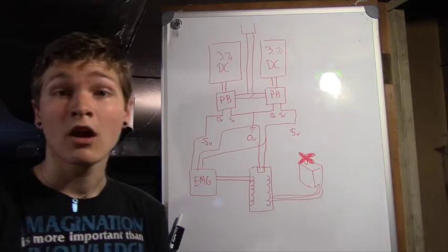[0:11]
So in this episode, we're going to be working on the electronics, so all the wiring, some of the code, and trying to get the electronics of the whole hand to work. All right, so this is essentially how the whole prosthetic is going to be wired up.
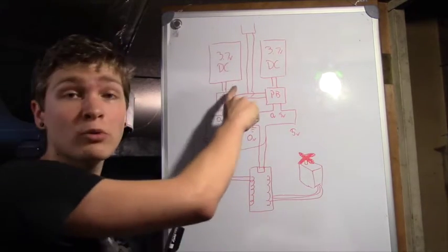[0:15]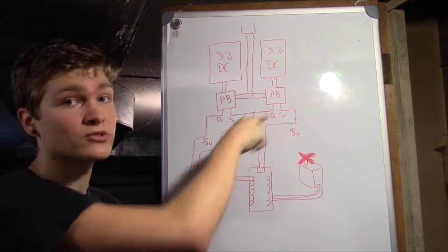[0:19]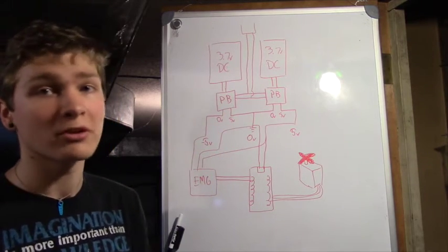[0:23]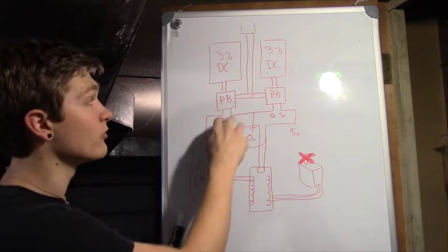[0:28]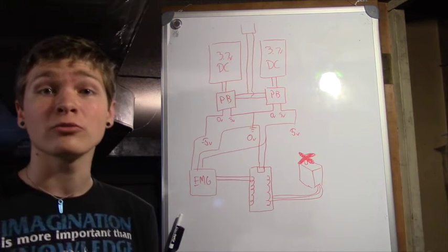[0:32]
I've got my two 3.7-volt lithium-ion batteries on the top, and those are both going into my Adafruit power boosts. And those are going to take the 3.7 volts and boost them up to 5 volts, 5.2 volts, but around there. And then what I'm going to do is take those two 5-volt and 0-volt outputs from the two power boosts, and I'm going to wire them in series. And what that would normally do for me is give me a 0 volts and a 10 volts, but I don't need 10 volts.
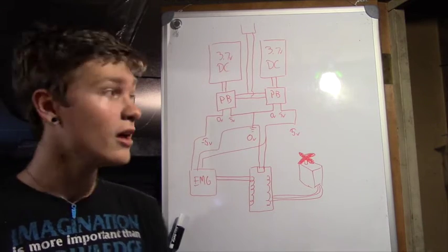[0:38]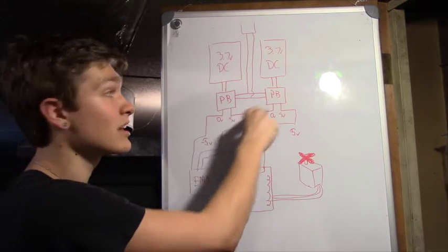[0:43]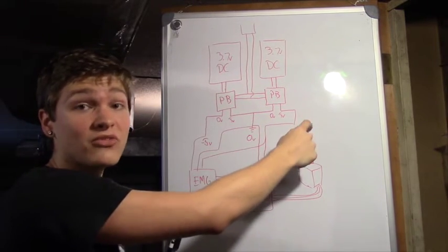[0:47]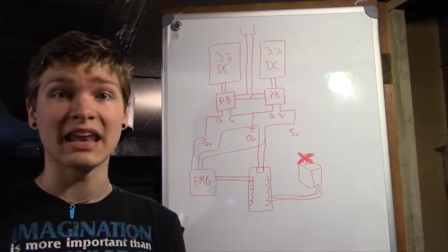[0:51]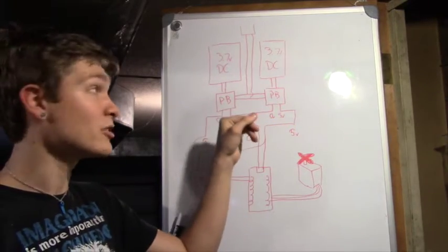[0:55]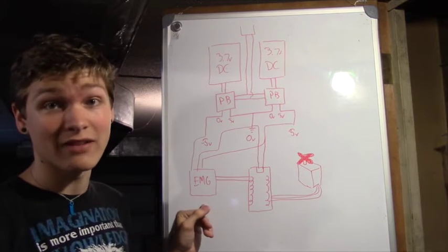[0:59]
I could power the Arduino, the servo, most everything off of 5. What I do need, though, is a negative 5 volts. So what I'm going to do instead is make the center connecting wire between the two power boosts my ground, and I'm going to make one side of the power boost 5 volts, and the other side negative 5 volts. My EMG board actually needs a negative voltage to work properly. So by splitting it up this way and making my center point here ground, I'm giving my EMG board the negative 5 and the 5 volts that it needs.
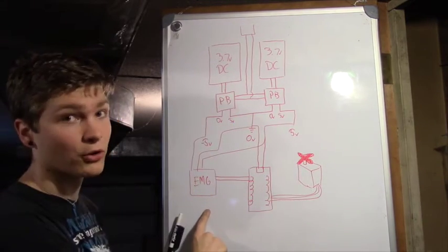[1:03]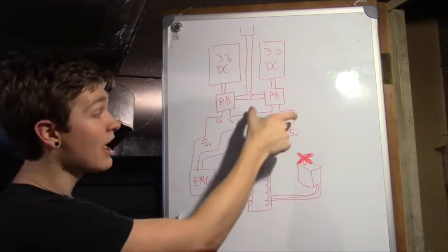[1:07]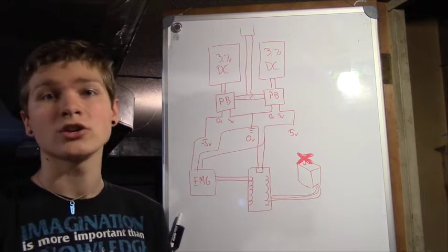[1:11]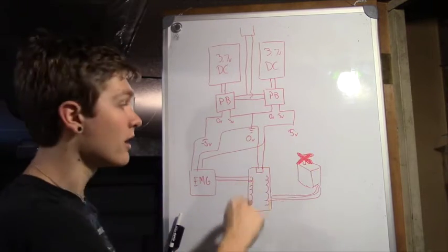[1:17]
So then I'm going to take those three outputs, and those are all going to go to the EMG board over here. Then I'm going to take my ground and my 5 volts and put those into the Arduino, and that's going to power the Arduino, the logic, all the buttons, all the switches, sensors, all that kind of stuff is going to be powered by that 0 and 5 volts there. That also means the servo, which is going to be connected to the Arduino.
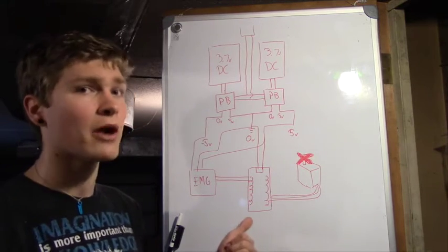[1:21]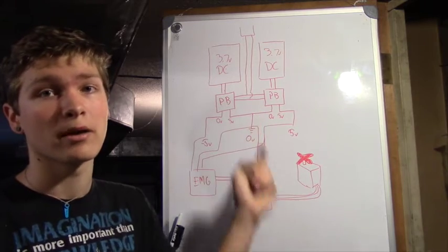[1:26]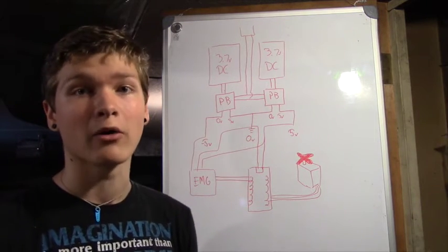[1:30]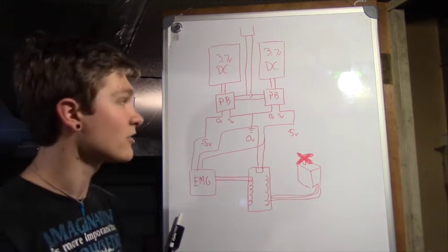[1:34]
It may actually be powered through the Arduino's voltage regulator, but I might just power it directly from the power boost because it probably has higher amp clearance. It can put out more power than the Arduino can, so I may just wire that directly into the power boost. But that doesn't really matter so much. So that's essentially how everything's going to get powered.
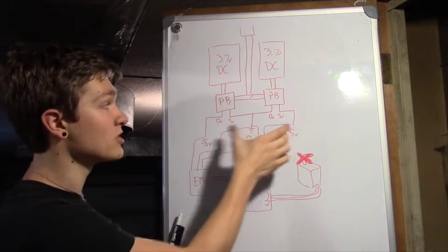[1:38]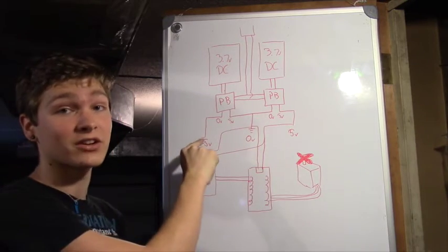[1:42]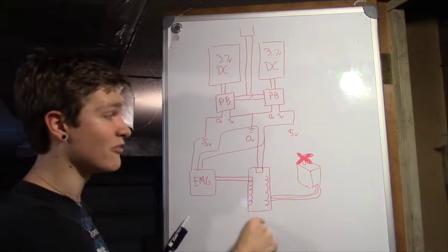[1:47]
I'm going to split my voltage up. It would normally be 10 after wiring in series, but I'm going to make the center ground instead of one side of it ground. And then I'll be able to get my negative 5, my positive 5 for the EMG, and then 5 and 0 for everything else that I need to power.
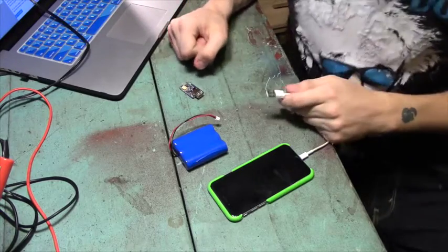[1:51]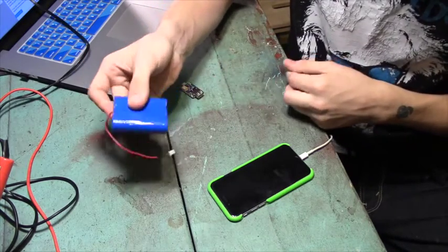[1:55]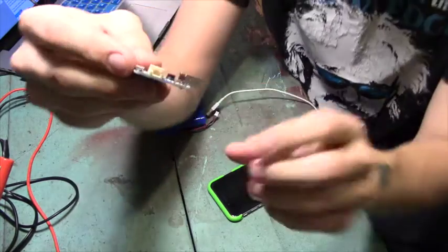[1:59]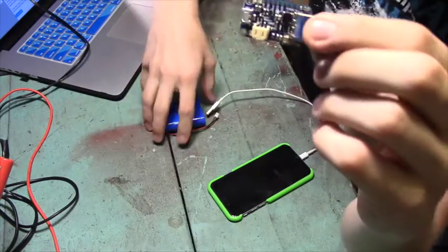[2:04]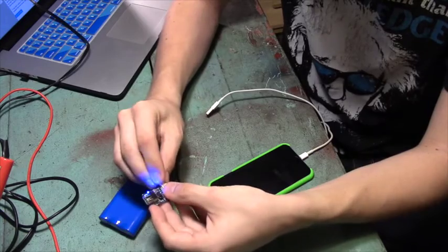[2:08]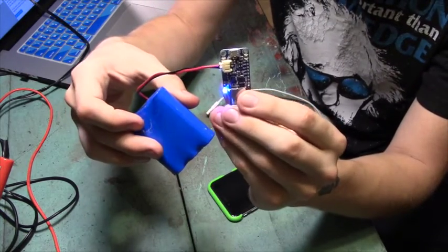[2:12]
All right, so here I've got a kind of a cool demo of how the 3.7-volt lithium-ion battery and the power boost from Adafruit are going to work together. So on the power boost, there is a JST connector right here on the bottom. And that fits perfectly with the battery that Adafruit also sells. So if I plug this in here, I'm going to get a blue power light, which tells me that I have 5 volts coming out that got boosted up.
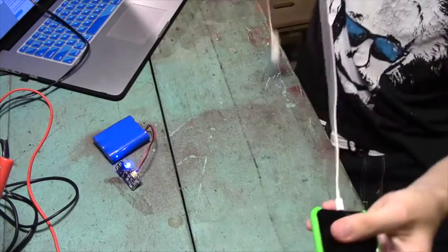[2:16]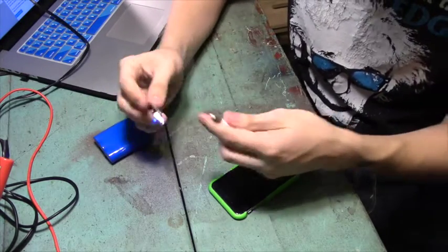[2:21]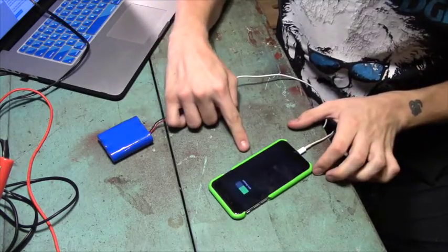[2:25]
And here I've got my iPhone 6 and a power cable with USB on the end, and I just soldered this USB connector to the power boost. And if I plug this in, you'll see my iPhone light up because it's charging.
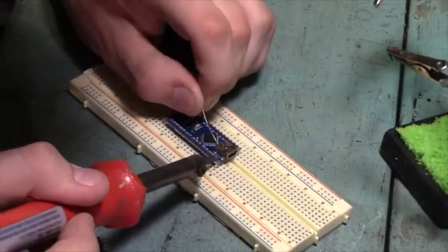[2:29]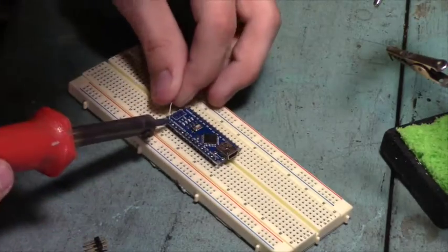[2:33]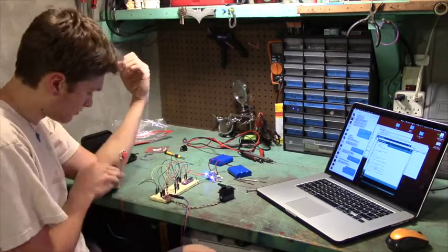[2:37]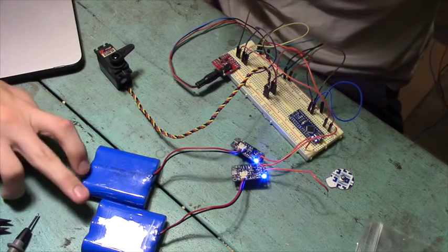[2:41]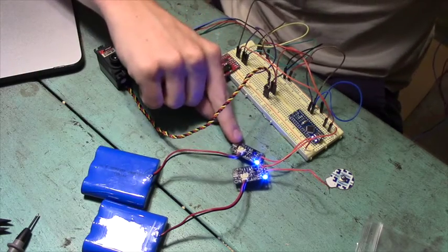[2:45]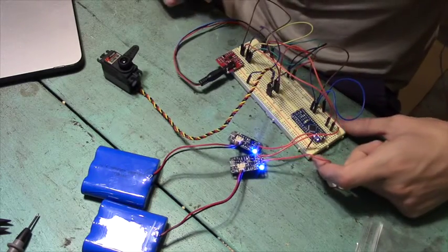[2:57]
So this is the bare bones circuit for the prosthetic. So here we have our two lithium ion 3.7 volt batteries, and both of these are going to our power boost, which are stepping them both up to 5 volts. Just like I explained earlier, they're wired together so that this wire right here is ground, this wire is negative 5 volts, and then this one is 5 volts. I have it disconnected right now just so I'm not chewing through power.
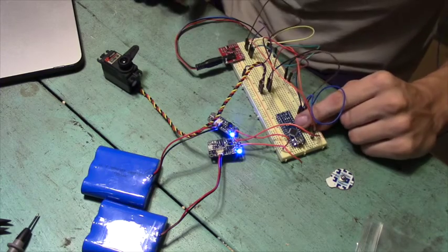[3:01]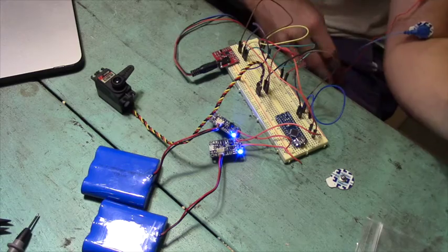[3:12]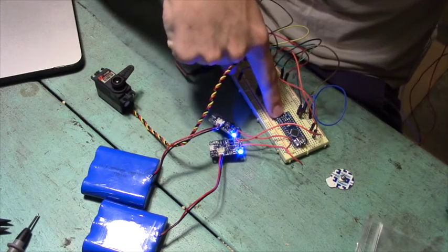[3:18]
Those go into our Arduino Nano, which controls the servo's movement based on the EMG sensor, which is this board here, and you can see this cable runs out, and then this ultimately goes over to my arm. So when I squeeze my muscle, this board takes a signal and sends it over to the Arduino through one of the analog pins, and then my code, which I'll show you in a sec, takes that signal and interprets it to figure out how to move the servo.
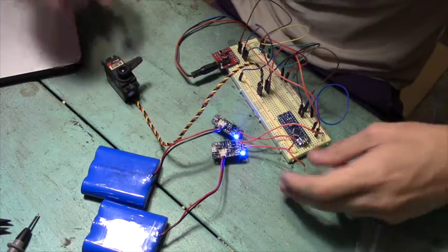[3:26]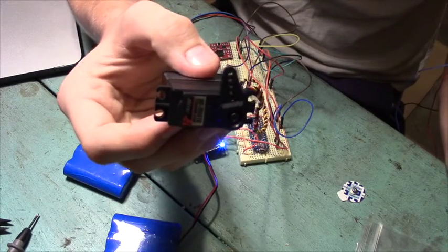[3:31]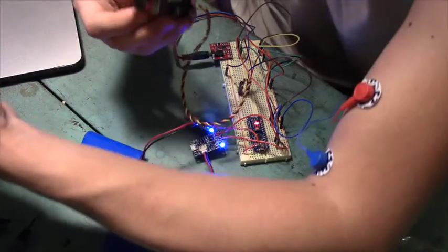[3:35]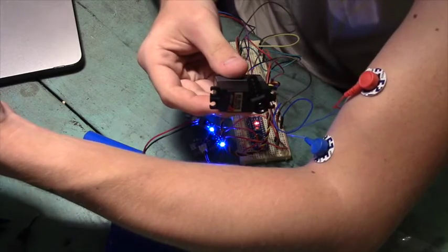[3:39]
So here we're going to turn it on. So Arduino's booting up. So here's our servo. I'm going to squeeze, let go, squeeze, let go, and all I'm doing is just tensing my bicep. Squeeze, let go. Squeeze, let go. Wow, that's actually super cool. Squeeze. And that's really jittery.
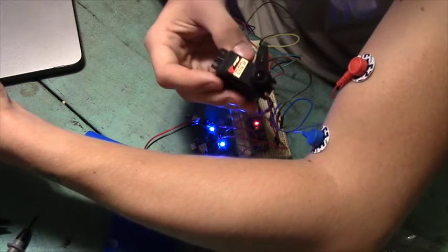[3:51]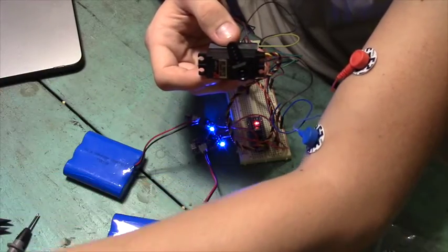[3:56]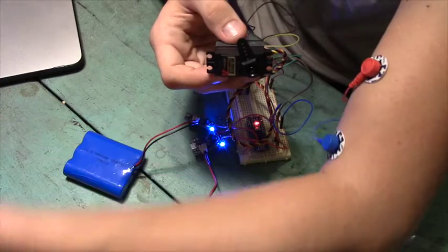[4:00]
That's something I'm going to be able to smooth out in the code. That's not too complicated. Let go. So it seems like it likes to sit at one position when I'm not really tensing at all. And I can still move my arm all right. It'll move a little bit, but it's really when I squeeze hard that it'll move.
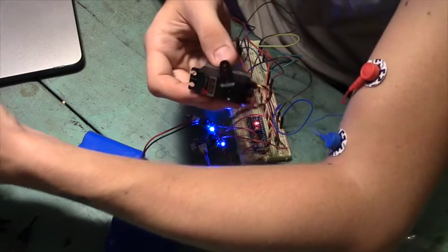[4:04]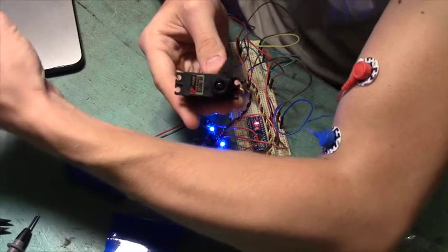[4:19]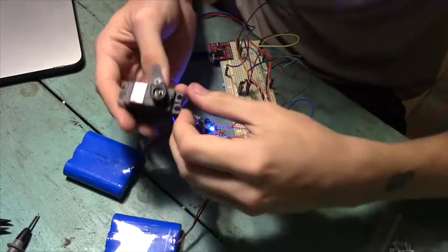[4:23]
So what I might do is, once it gets past a certain point, it'll just move all the way to its completely open position, all the way up there, so it's not wiggling so much. And then when it lets go, when it gets beneath a certain threshold, it'll just go back to its home position. And I think that'll be one of the modes. But it definitely needs some smoothing out. That's pretty cool, though. So yeah, that's the bare bones of the circuit.
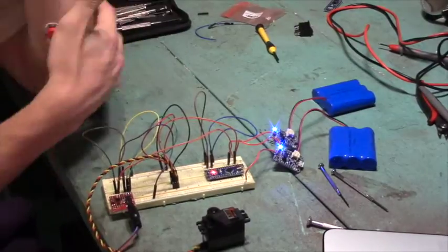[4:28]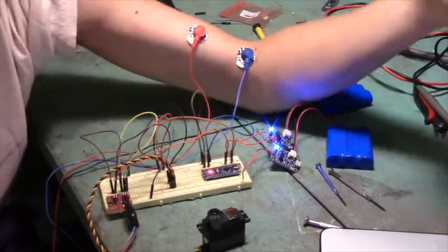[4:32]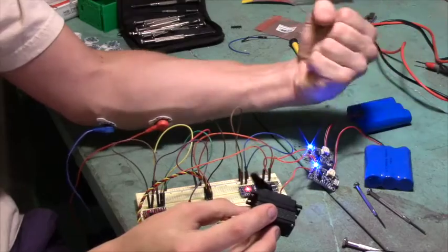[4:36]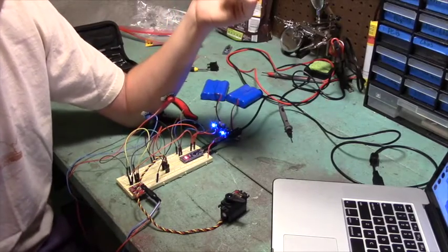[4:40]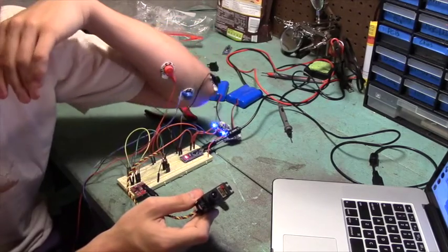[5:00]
All right, so I've written some new Arduino code, and it's working a little bit more sensibly now. So now I've got my servo here, and this is in position 0, or it's farthest over. And if I squeeze, it moves all the way over to its other position, 180 degrees across. And then I let go, and it moves back. So it's kind of a binary positioning system at this point. And now I have it mapped out to this muscle on the edge of my forearm.
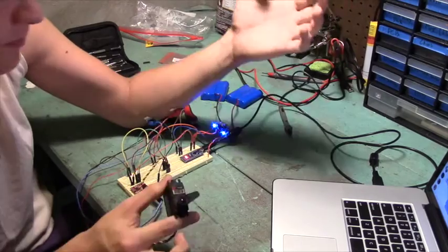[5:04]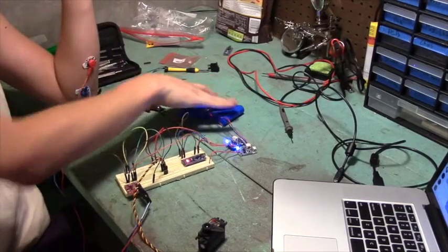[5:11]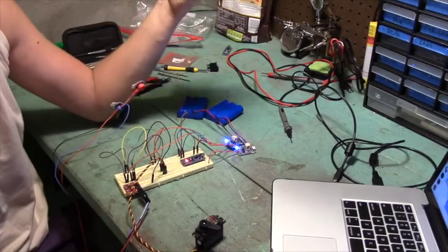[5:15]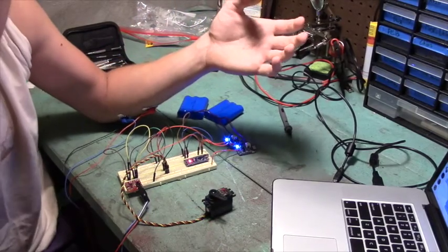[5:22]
Nevertheless, pretty cool. This whole circuit is essentially a proof of concept. If I unplug this USB here, this is all completely unconnected to a computer. This is battery powered all along here. Nothing connected. So this is essentially what I'm gonna wire up and put inside the prosthetic. All right, let's take a look at the code.
So just a quick walkthrough of what it is. I included the servo library so the Arduino can talk to the servo appropriately. Then I have a couple variables I set up. Not pin setup, but variable setup. So here I have servo, this is pin 13. And then EMG input is gonna be A0, that's our analog pin that's reading the signal from the EMG board. And then the EMG value is what this pin gives us. So we'll update that repeatedly throughout the code.
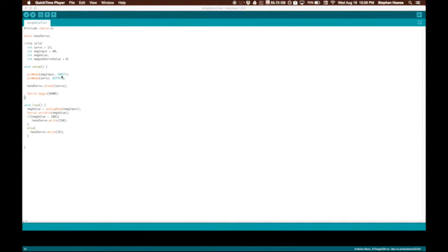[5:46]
So then I set my input pin as an input and my servo as an output pin. And then I attach my servo to pin 13 and I start a serial connection. So what this will do, you can see down here, I print out my EMG value so I can always see what my EMG board is putting out, just for debugging purposes. So this loop repeats over and over and over again. And what happens here is we read the EMG input, which is A0, and we assign that value to this variable here, and we print that out for debugging.
So then what I do is, if the EMG value is greater than 180, it writes essentially the 180 degree position. And if not, if it's less than 180, which is my arm relaxed, then it writes essentially the zero position. So open hand, not squeezing anything. This is the squeezing, grabbing onto something position.